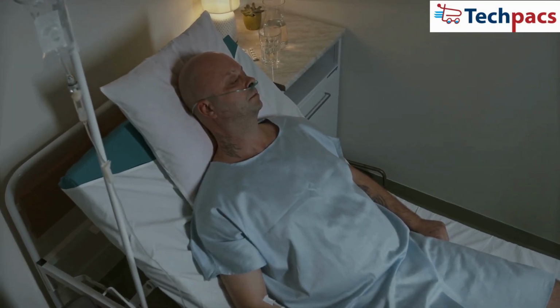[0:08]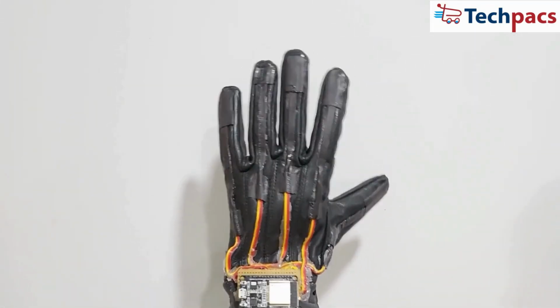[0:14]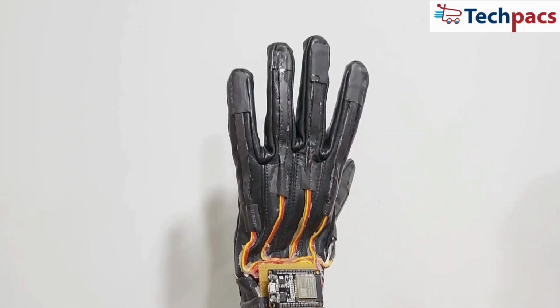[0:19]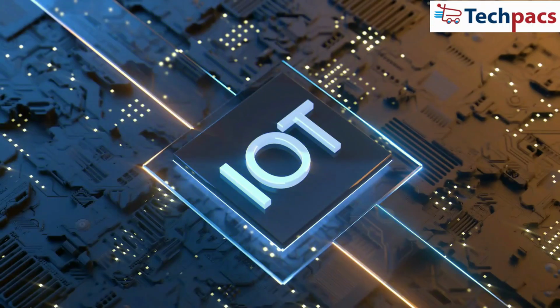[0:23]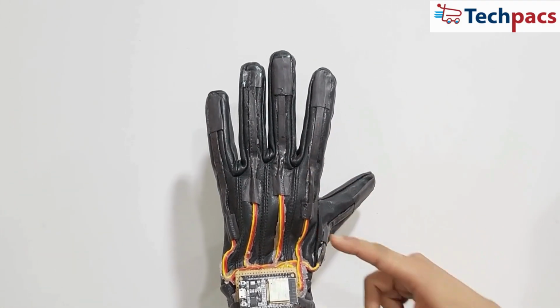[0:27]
communication using a smart glove equipped with flex sensors. The primary goal of this project is to create a smart glove that detects different finger gestures using flex sensors and sends corresponding commands to a remote location via IoT. These commands can be used to communicate needs and emergencies effectively.
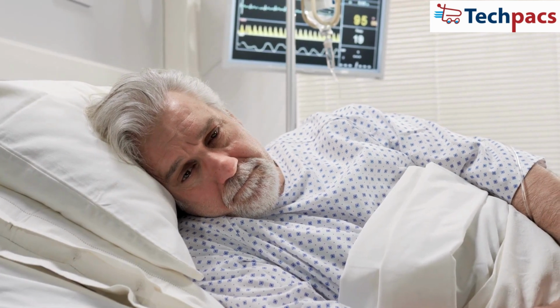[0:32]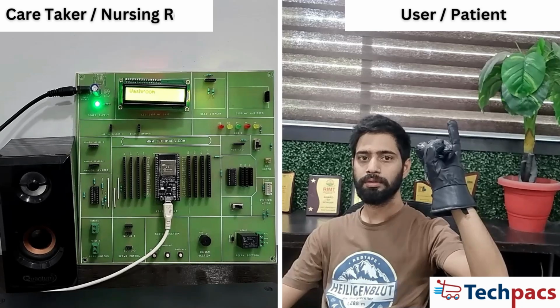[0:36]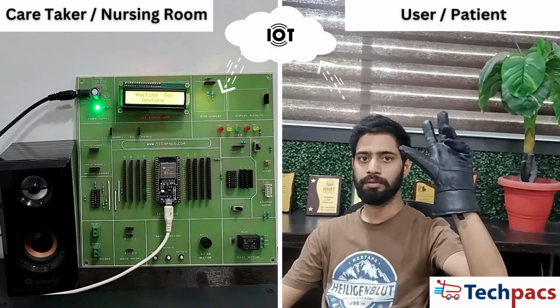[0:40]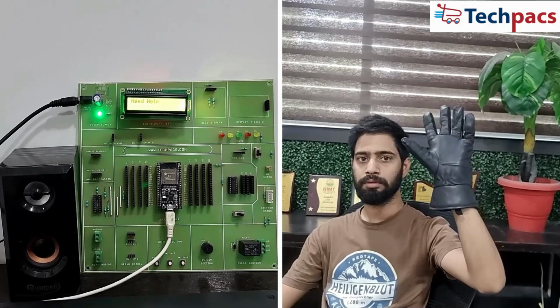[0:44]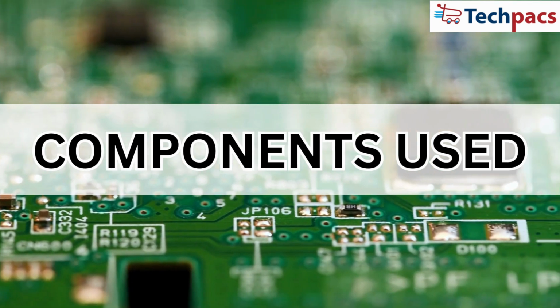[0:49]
For many elderly and disabled individuals, communicating their needs can be challenging. This smart glove aims to bridge that gap by allowing them to send predefined gestures that translate into voice messages for caregivers, ensuring prompt and accurate assistance. Let's take a closer look at the components that make up this innovative project.
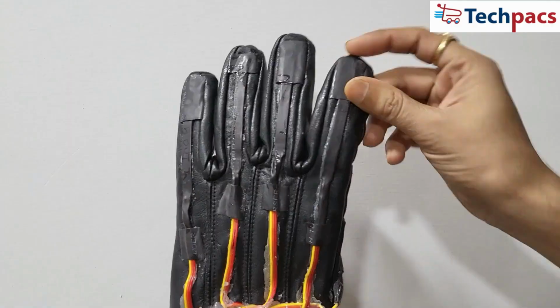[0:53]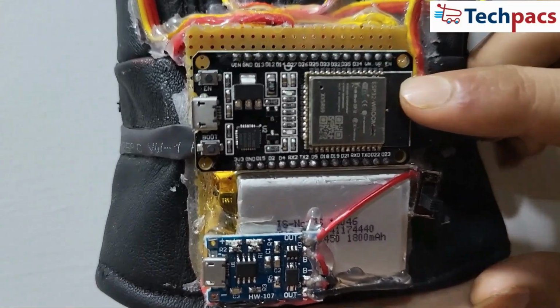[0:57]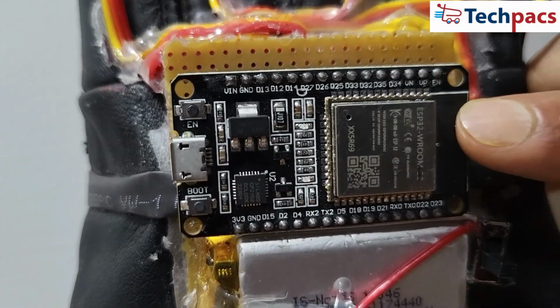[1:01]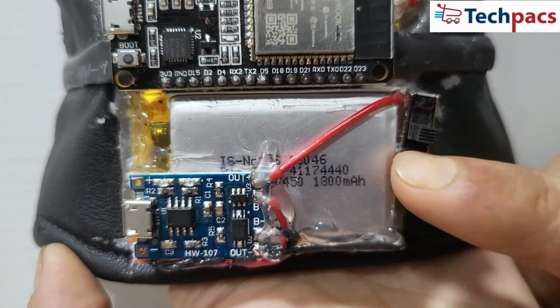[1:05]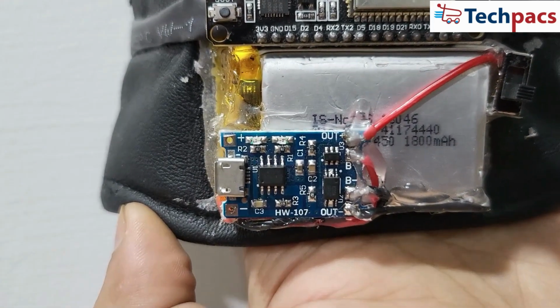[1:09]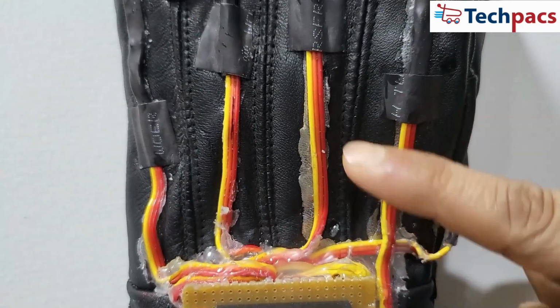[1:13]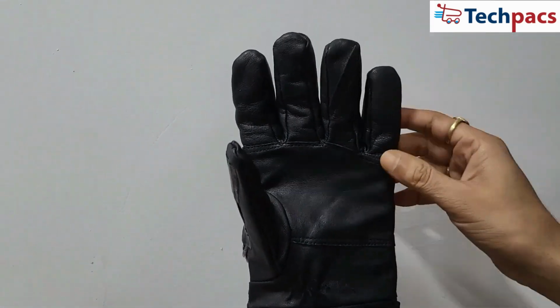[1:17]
Flex sensors. These are attached to each finger to measure the degree of bending. ESP32 microcontroller, the brain of the system that processes sensor data and handles IoT communication. Lithium-ion battery, 1800 mAh 3.7 V, powers the entire system. Battery charging module, ensures the battery remains charged and ready for use. Connecting wires, used to connect all the components. Glove, the base material on which all components are mounted.
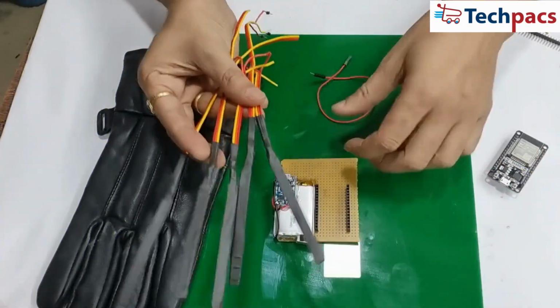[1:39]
Here is the circuit design and schematic in detail. The attached circuit diagram illustrates the connections between the flex sensors, ESP32 microcontroller, and the power source. Each flex sensor is connected to an analog input pin on the ESP32, while the battery and charging module provide the necessary power. Now, let's move on to the assembly process with a step-by-step guide.
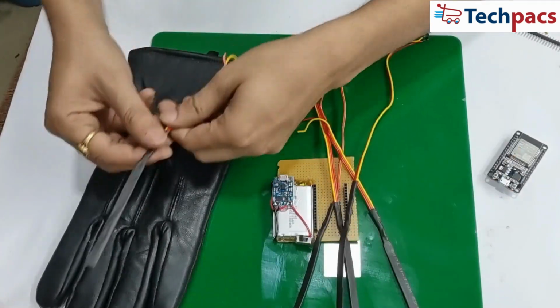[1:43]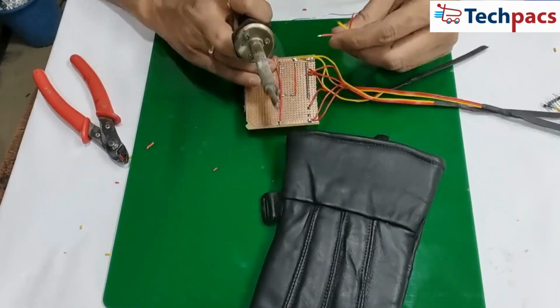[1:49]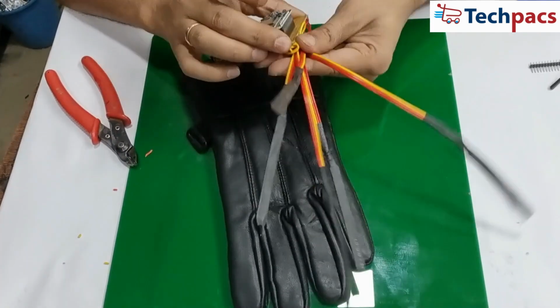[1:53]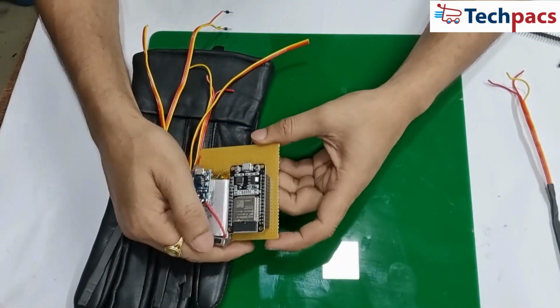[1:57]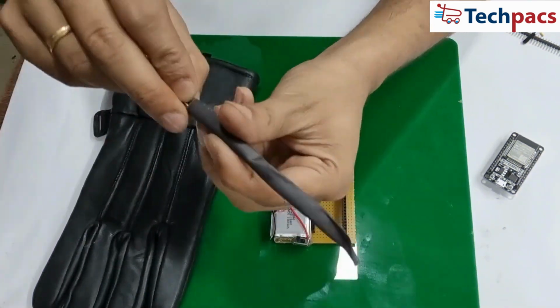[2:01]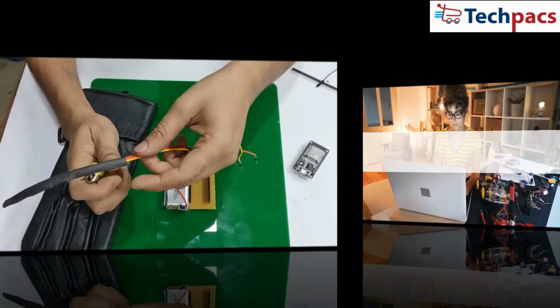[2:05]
1. The flex sensors were attached to each finger of the glove using adhesive. 2. The wires from the flex sensors were connected to the corresponding analog input pins on the ESP32. 3. The battery was secured to the glove, and the charging module was connected to the battery. 4. All connections were insulated and secured with electrical tape to ensure safety and durability.
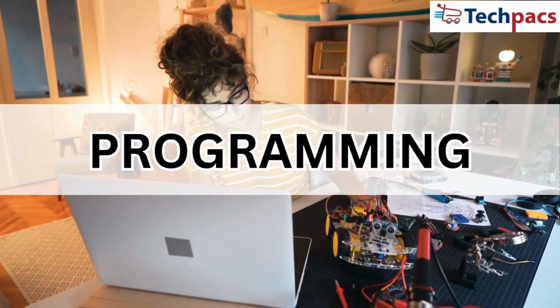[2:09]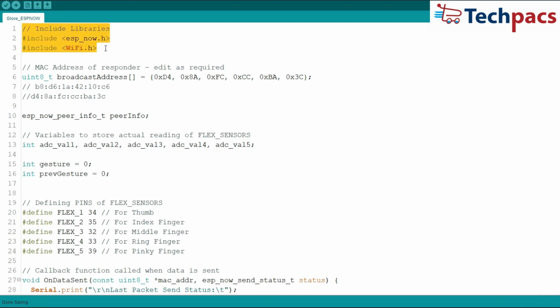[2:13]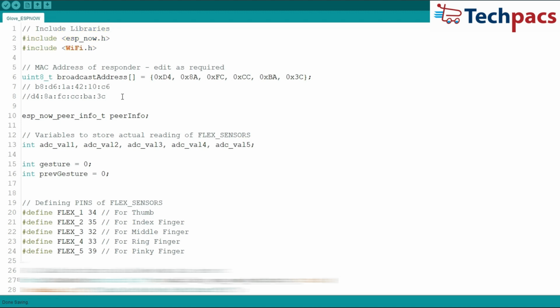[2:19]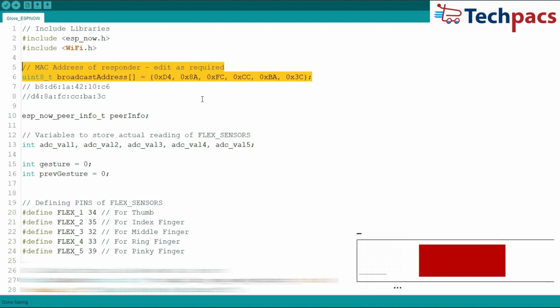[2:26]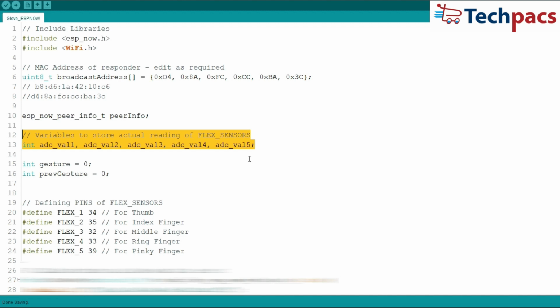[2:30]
Next, let's talk about programming the ESP32 microcontroller. We start by including the necessary libraries, ESPNow.h and Wi-Fi.h. These libraries allow us to use the ESPNow protocol for wireless communication. Next, we define the MAC address of the responder, which you'll need to edit based on your device. We also initialize variables to store the readings from the flex sensors and define the pins they're connected to.
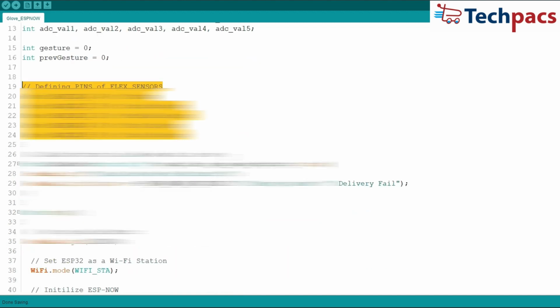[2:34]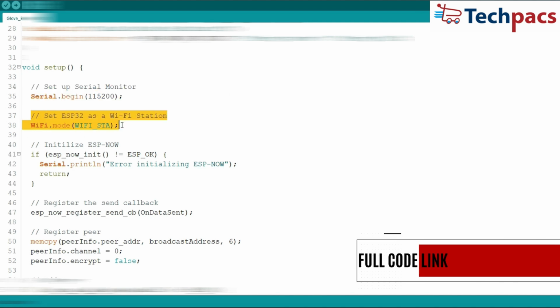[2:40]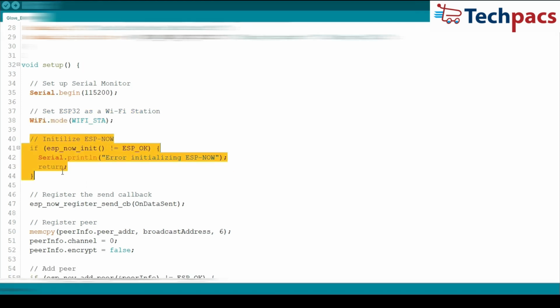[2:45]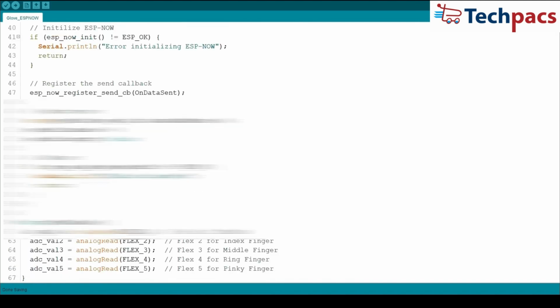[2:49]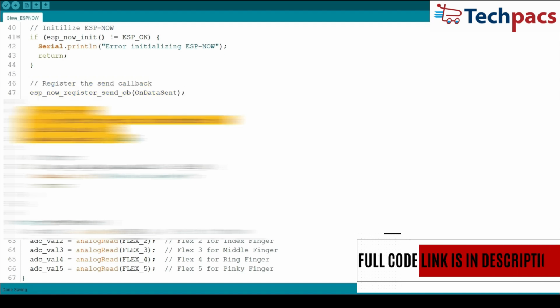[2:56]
In the setup function, we begin by setting up the serial monitor at 115200 baud rate. We then configure the ESP32 as a Wi-Fi station and initialize ESPNow. If initialization fails, an error message is printed. After initialization, we register the send callback function to handle the data sent status and add the peer using the MAC address we defined earlier.
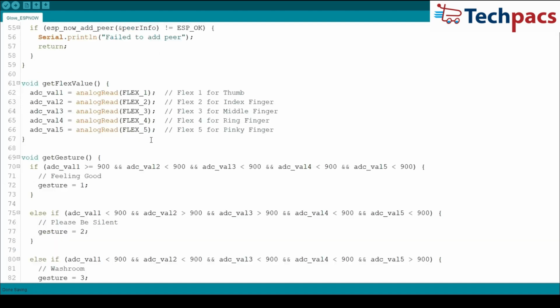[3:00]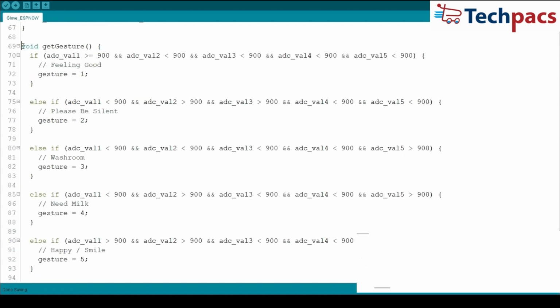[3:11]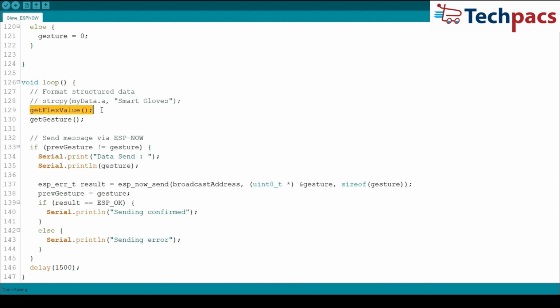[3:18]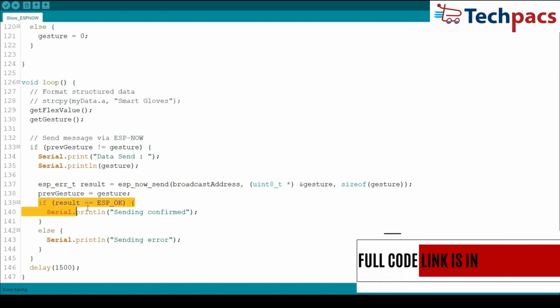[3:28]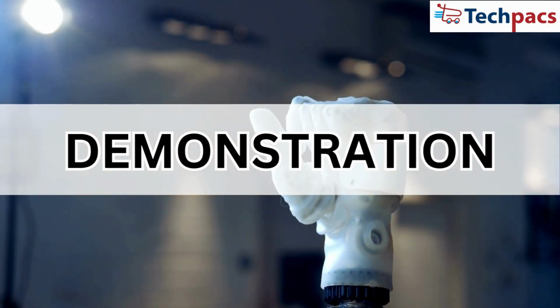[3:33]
Now, let's move on to the core of our project, reading sensor values and detecting gestures. The getFlexValue function reads the analog values from each flex sensor. The getGesture function maps these values to specific gestures based on predefined conditions. In the loop function, we continually read the flex sensor values and determine the current gesture. If the gesture changes, we send the new gesture value to the responder via ESPNow. A confirmation message is printed if the send is successful. Now for the exciting part, demonstration of the project.
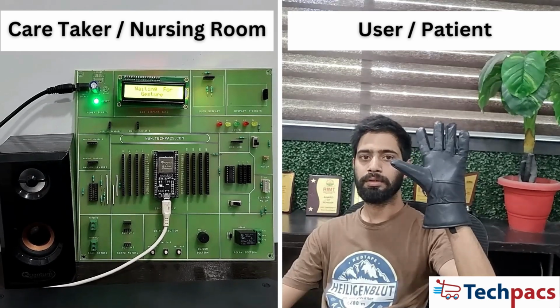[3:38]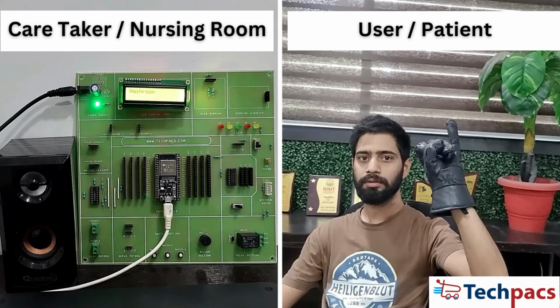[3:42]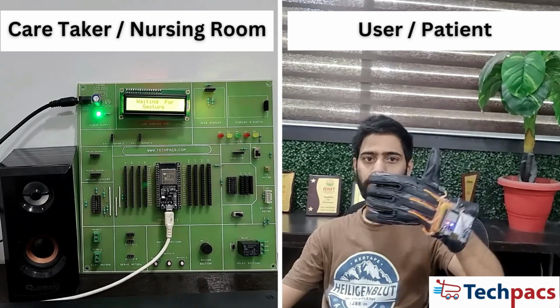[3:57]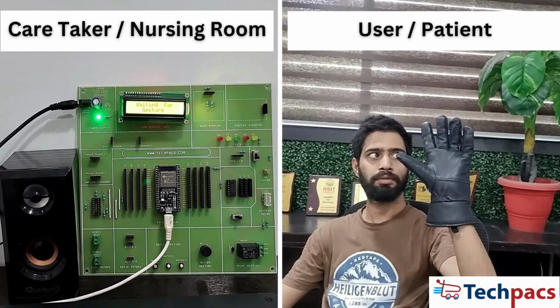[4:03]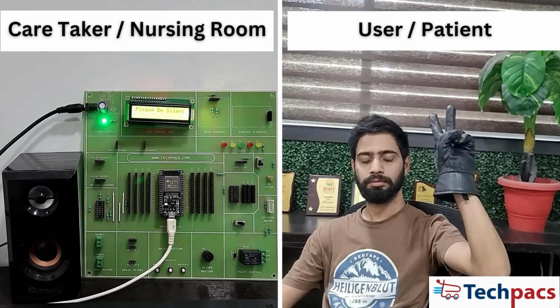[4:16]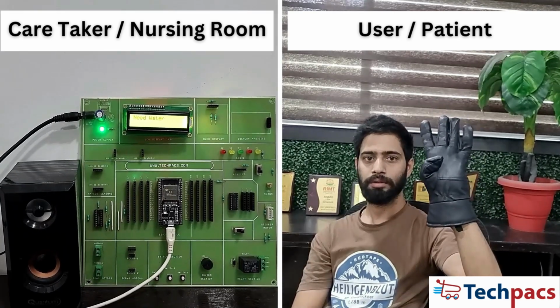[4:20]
Washroom. Hungry. Need help. Happy. Need milk. Need water. Need help.
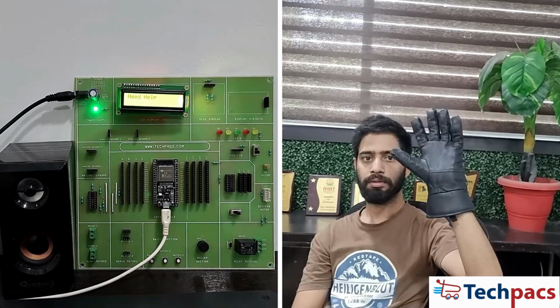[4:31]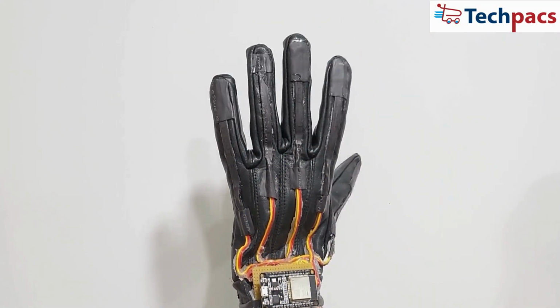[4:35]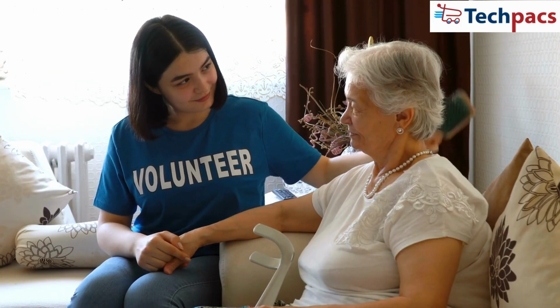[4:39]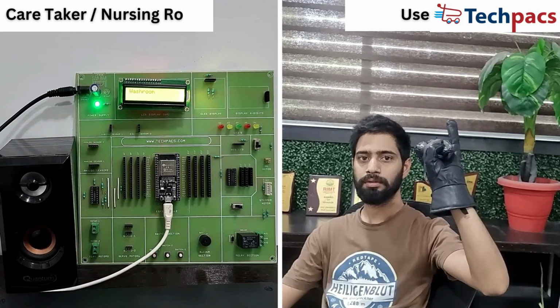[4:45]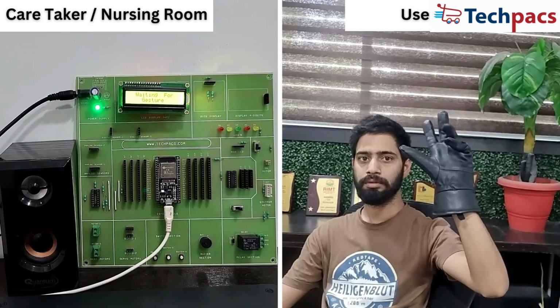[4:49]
Let's discuss the results. The smart glove accurately detected and transmitted gestures, demonstrating its potential as a communication tool for elderly and disabled individuals. The voice messages generated provided clear instructions to caregivers, ensuring prompt assistance.
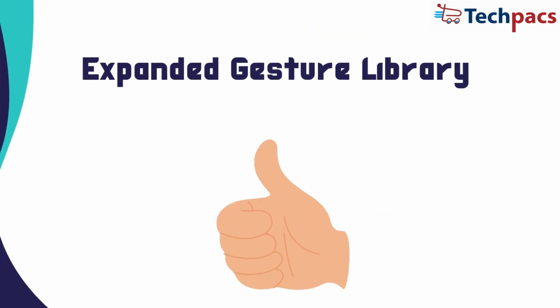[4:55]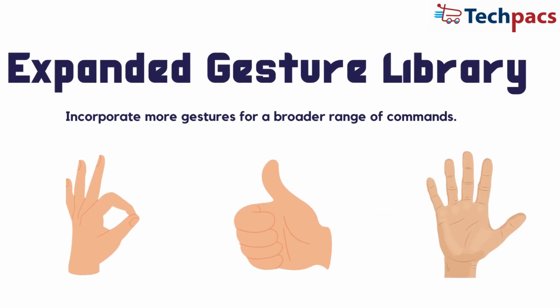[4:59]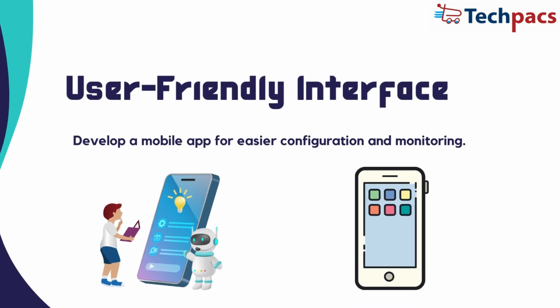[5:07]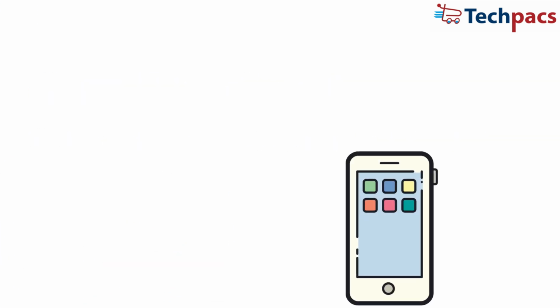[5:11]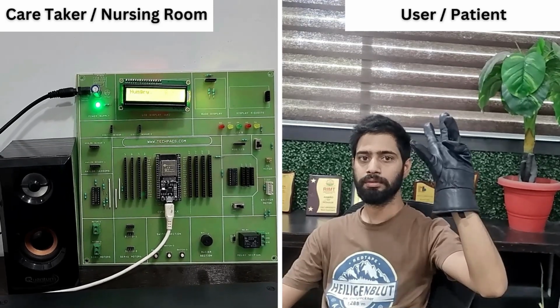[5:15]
Looking ahead, there are several potential uses and enhancements for this project. Expanded gesture library, incorporate more gestures for a broader range of commands. Enhanced communication, integrate with more robust IoT platforms for better reliability. User-friendly interface, develop a mobile app for easier configuration and monitoring. In conclusion, the Smart Glove Project has the potential to revolutionize how elderly and disabled individuals communicate with their caregivers.